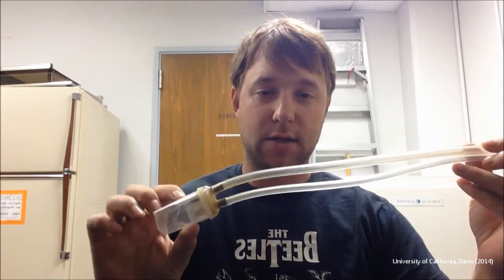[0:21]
I'm going to show you how to build a cartridge aspirator. First, let's talk about what an aspirator is. Standard aspirators are used to suck up small specimens. I'm an entomologist, so we suck up ants and aphids and whiteflies and leaf miners and things like that, small insects. A standard aspirator that you'll see in most catalogs will look something like this.
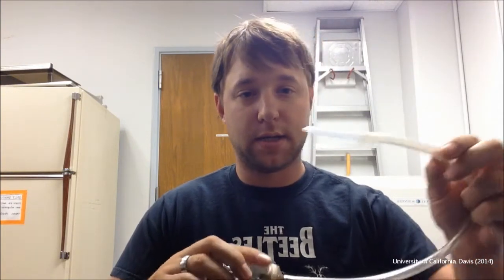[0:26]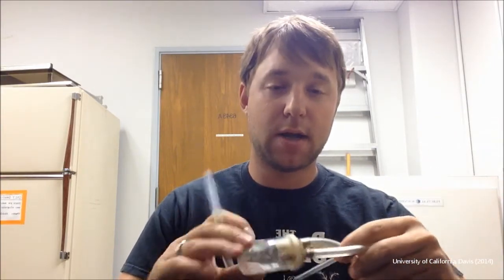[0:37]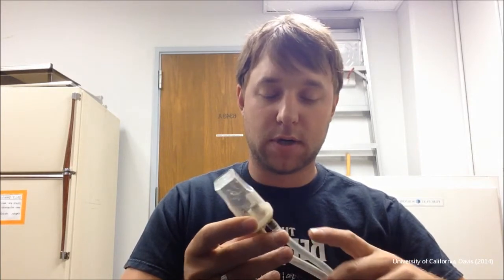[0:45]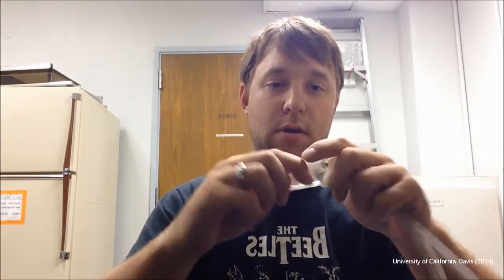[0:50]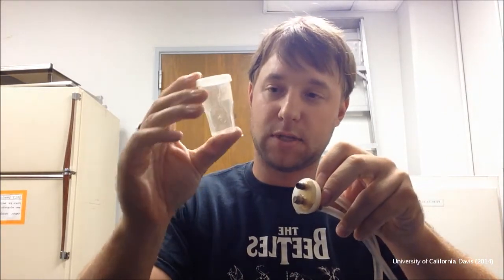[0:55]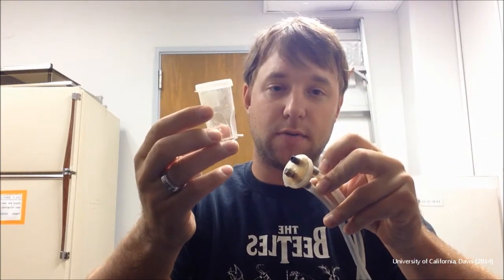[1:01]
You'll have a container that the specimen is held in, a tip of some type that you suck up the specimens with, and on the other end, you use your mouth and suck, and it causes a vacuum in the container, and your specimen will get sucked up through the tip and into the container. There's a screen on one of the tips to make sure that you don't suck up whatever you're trying to get into your container. Then you pop the container off and put on a lid and put a new container on, and you're set to go, and you have your specimen contained here.
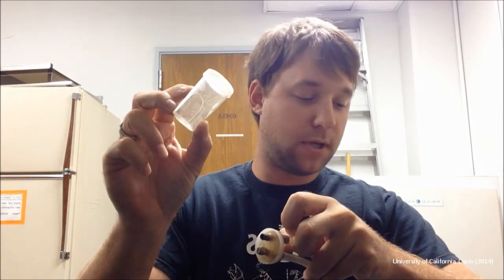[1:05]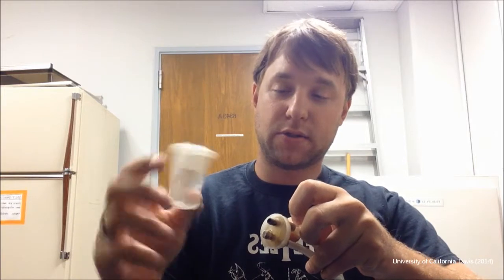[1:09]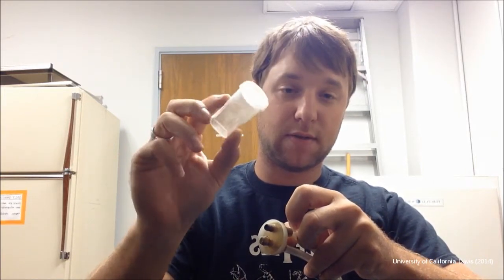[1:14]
The problem with these aspirators is that when you remove this container, if you're working with specimens that are highly mobile, they can easily escape unless you're very quick at it, and sometimes that doesn't happen. Also, these containers can be fairly large compared to what you're aspirating, and you have to carry around a lot of these, which can be inconvenient also.
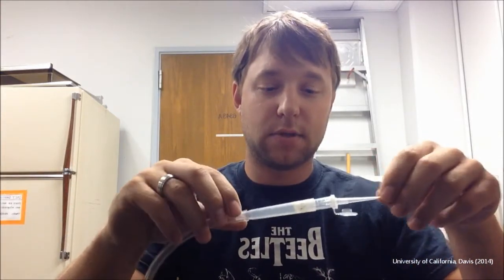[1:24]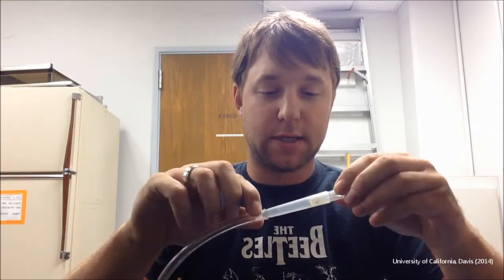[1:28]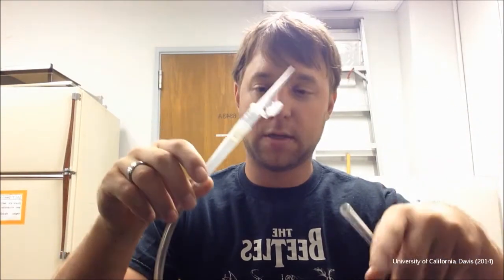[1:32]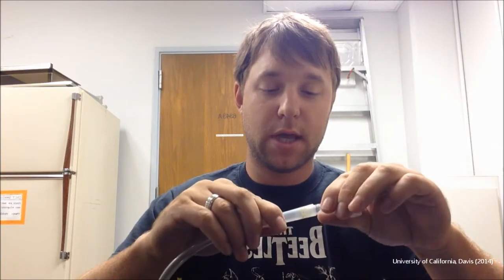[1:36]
So today I'm going to show you how to make a different type of aspirator that we call a cartridge aspirator. It's very similar to what's also known as a pooter. It consists of suction hose, Tygon hosing, widely available, and several other lab supplies that we'll talk about shortly.
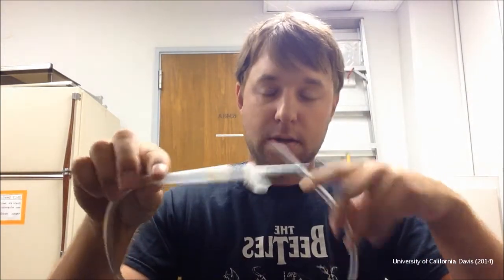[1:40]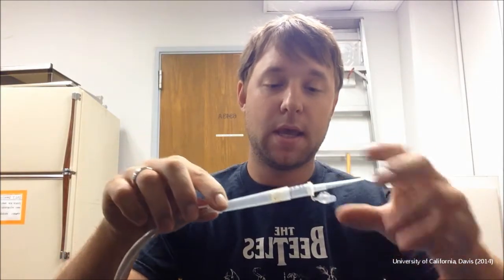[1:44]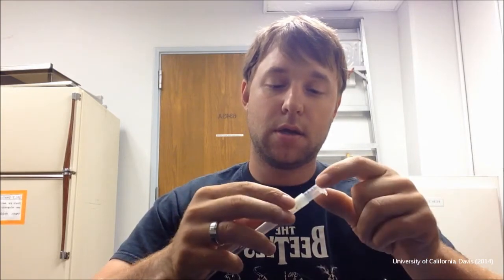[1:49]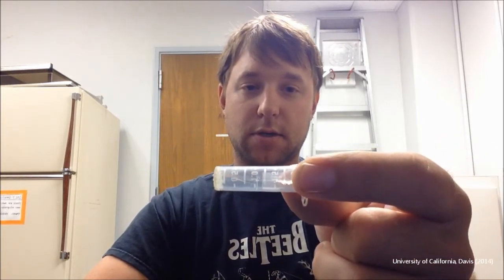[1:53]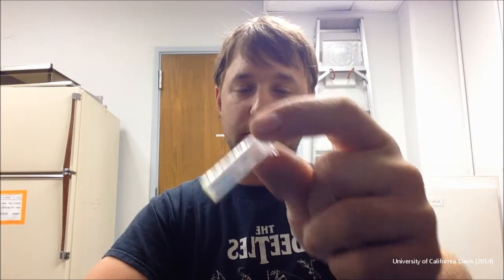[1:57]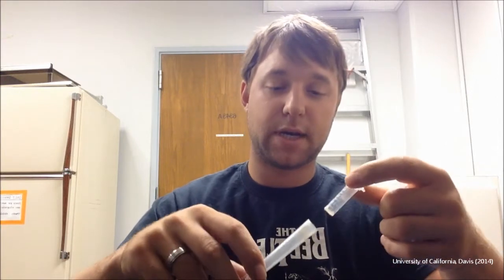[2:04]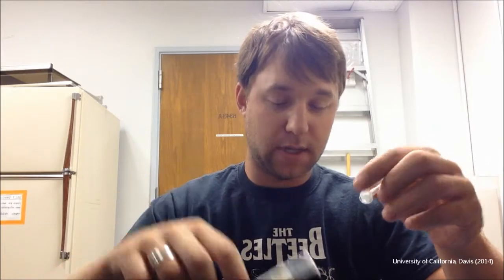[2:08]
The benefit to this is when you're sucking in your specimens, when you're done, you can continue sucking, remove the tip, close the lid, pull out the cartridge, and then you have your specimen in your cartridge ready to go. There's a screen on the bottom there, so you have a much smaller container. You can store that and go and put the next one in. The other benefit is this is all made out of very cheap supplies that you can get at any laboratory supply store. So I'm going to show you how to make that right now.
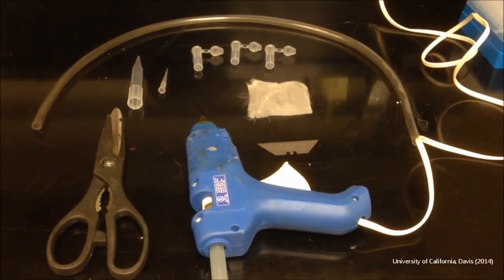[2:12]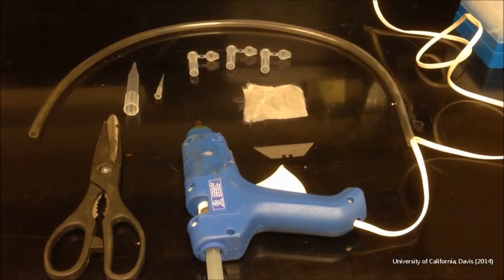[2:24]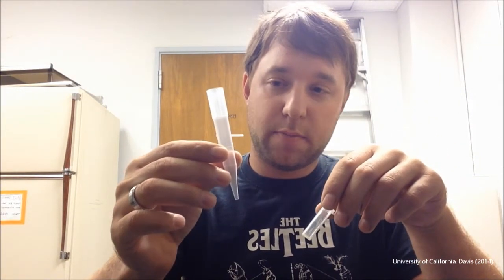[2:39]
What you will need for this project is scissors, a hot glue gun, a razor blade, some type of fine mesh that your specimen won't be able to come through, a small pipette tip around 1 mil, a large pipette tip 5 mil, Tygon tubing, and 2 mil centrifuge tubes. The first thing you're going to make is the aspirator body, or the cartridge receiver. I have a pre-made cartridge here, which is just a 2 mil centrifuge tube, and our 5 mil pipette tip.
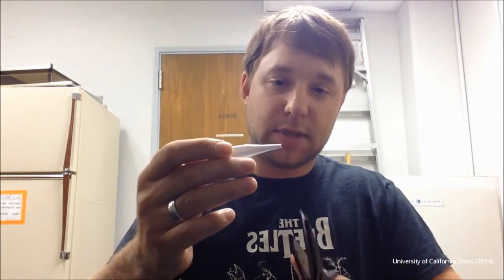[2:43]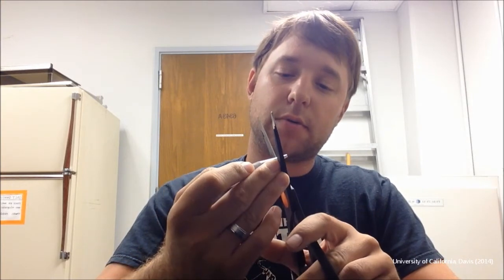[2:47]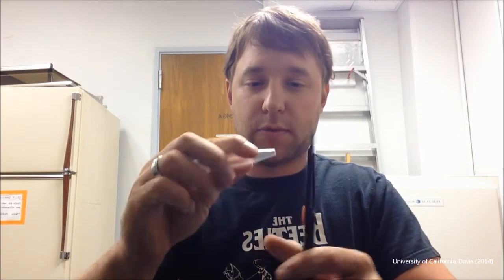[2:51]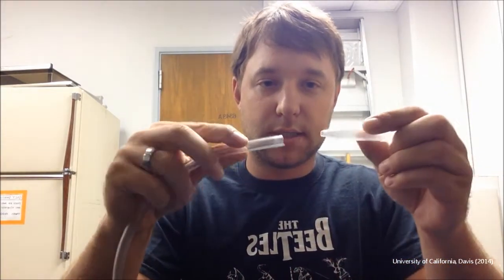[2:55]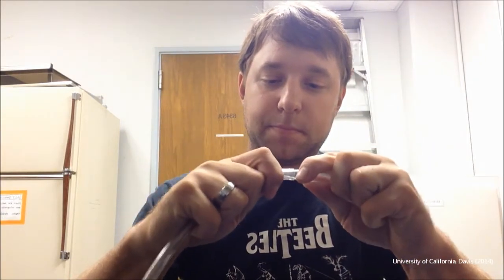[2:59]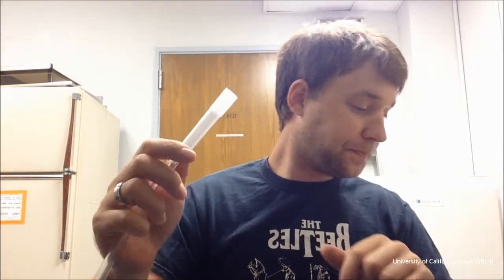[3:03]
The first thing we're going to do is snip the tip off of the pipette tip so we get higher airflow. We don't want to go too far up because we need to still put this into the Tygon tubing. Then we're going to take this and insert it into the Tygon tubing firmly. So there we go.
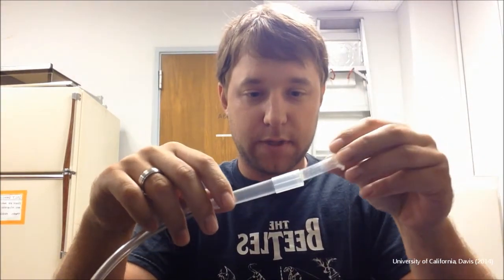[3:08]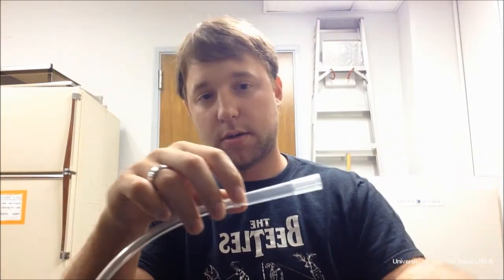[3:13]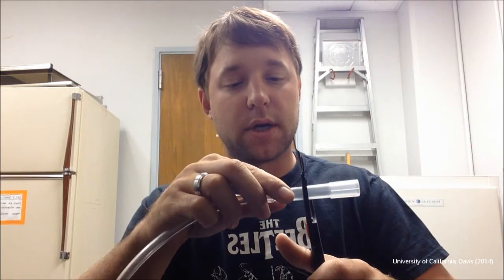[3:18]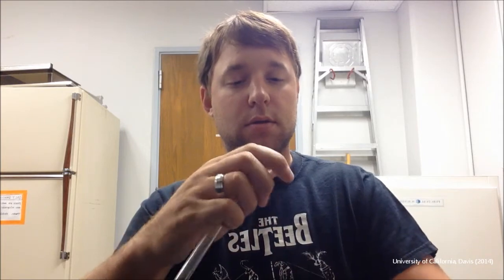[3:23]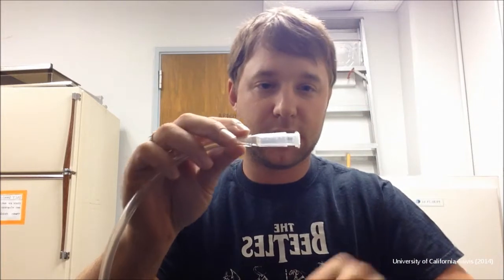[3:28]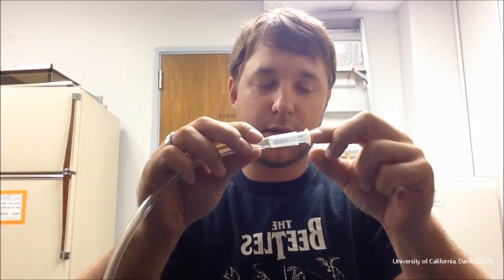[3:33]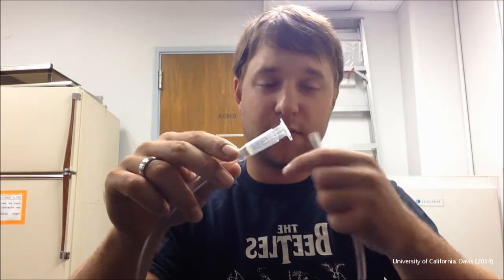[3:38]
And then the second step is we need the cartridge to fit snugly in here so that there's no airflow around it. So we're going to take our scissors here, and we're going to cut this pipette tip so that the centrifuge tube fits securely in the pipette tip. It sticks out a little bit so it's easy to pull out, but once it's in there, it forms a tight fit. One way you can check this is stick a cartridge in there, suck on the tube, and if you can't suck while the lid's closed, you're golden.
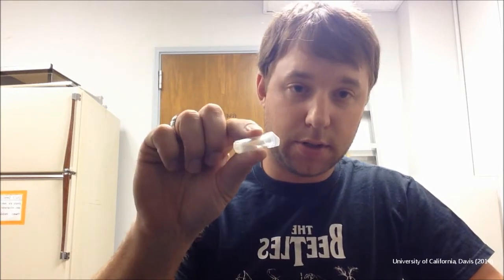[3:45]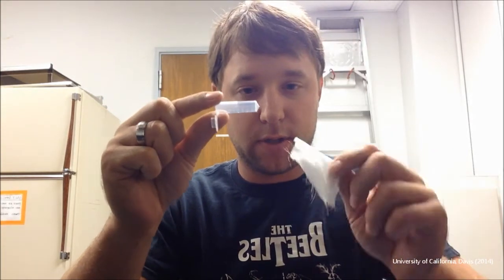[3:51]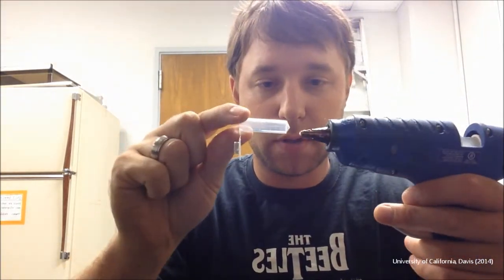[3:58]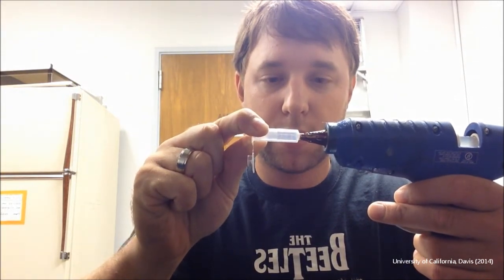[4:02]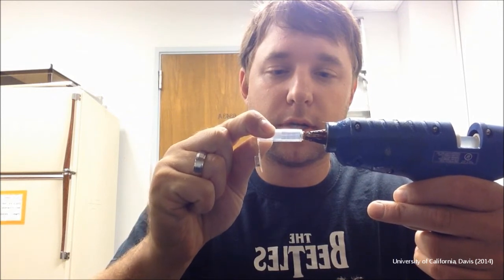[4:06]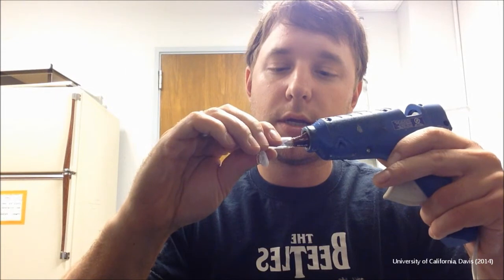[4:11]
Your second step is going to be to build the cartridge, which is very simple. It's just the 2 mil centrifuge tube and some screening, and we're going to melt out the bottom of the tube and glue it to the screening. So we take our hot glue gun, preheated, and we're going to melt the bottom of the centrifuge tube with the glue gun. Give it a second. These tubes take a decent amount of heat.
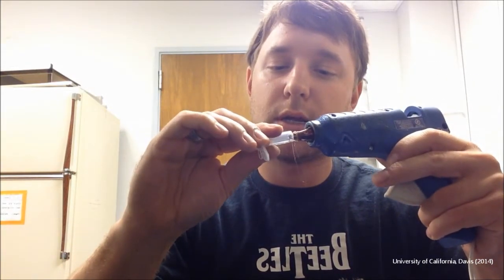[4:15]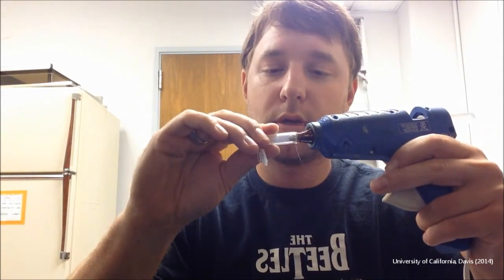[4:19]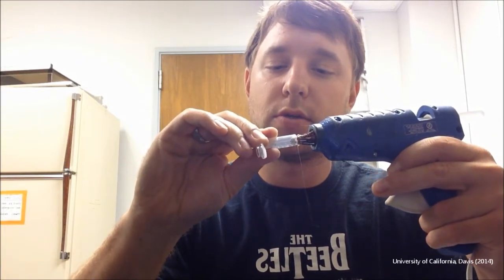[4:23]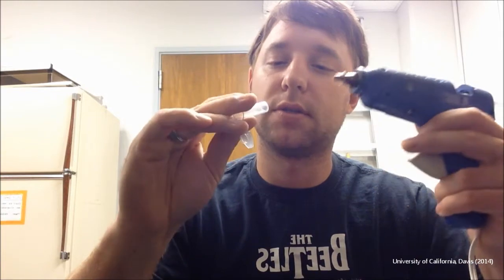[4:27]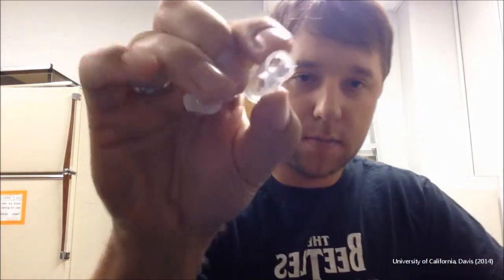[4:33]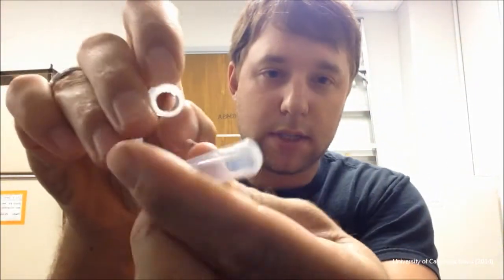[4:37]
If you're doing a lot of these and you're in a well-ventilated area, a soldering iron also works very well for melting out the bottoms of these tubes. But they tend to burn the plastic instead of just melting it like the hot glue gun, so you have to be in a well-ventilated area. So the bottom is now melted out of the tube. Okay, bottom's melted out.
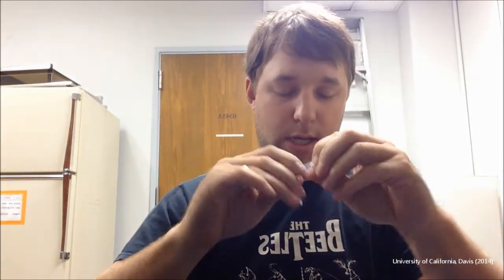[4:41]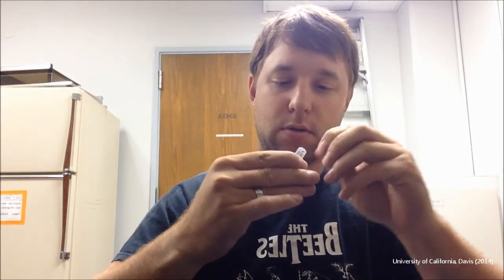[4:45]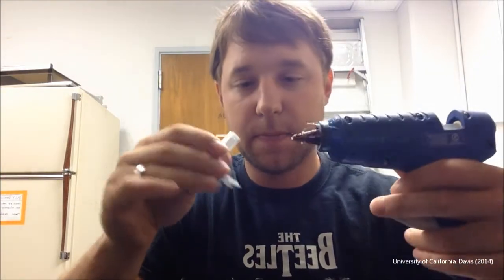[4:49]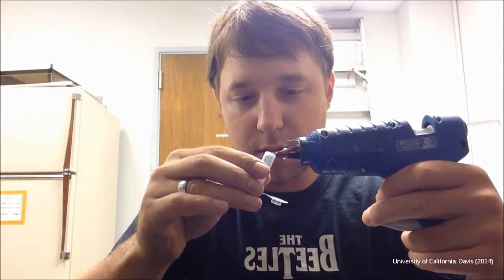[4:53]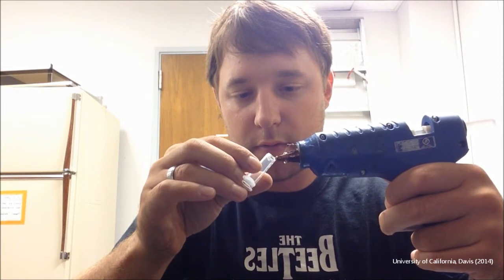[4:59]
So then we're going to make sure that there's no melted plastic inside the tube. Then we're going to take our hot glue gun. We're going to lay a nice bead around the edge of the tube that we just melted off.
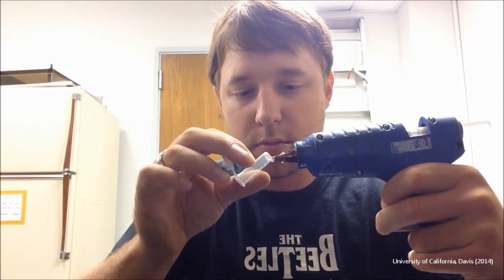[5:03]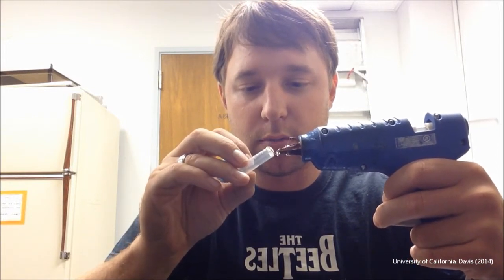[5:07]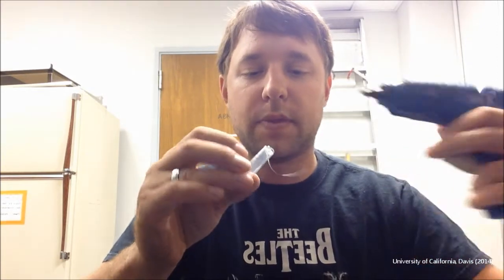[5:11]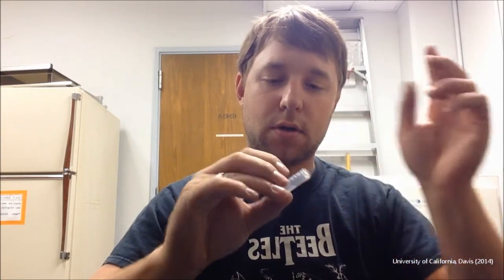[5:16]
Be very careful not to put too much glue. If you put too much, you can end up restricting the airflow. So there we go. That's hot glue strings everywhere. So then we're going to take that. You can't see it down here, but I'm going to push it onto my screening on my tabletop. Give it a slight spin.
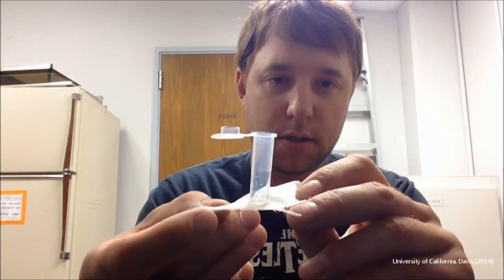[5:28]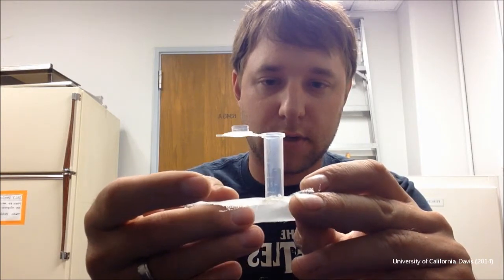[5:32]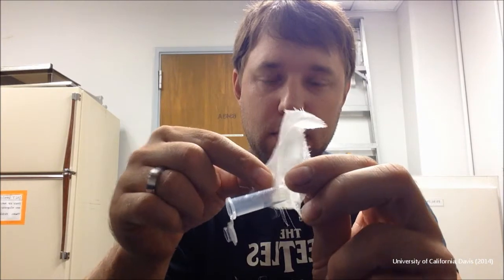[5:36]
So now my centrifuge tube is glued to my screening. Okay. So we're going to let that cool. We're going to do several of these at a time. And then we're going to go back through once they're all dry and cut them out.
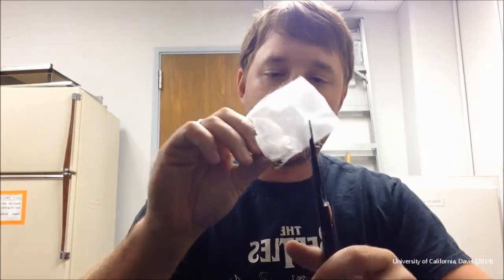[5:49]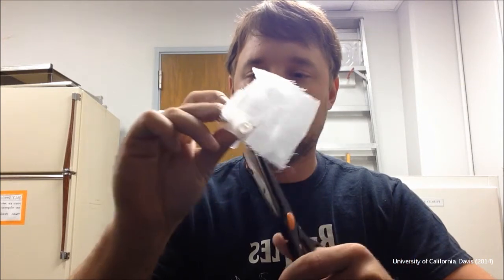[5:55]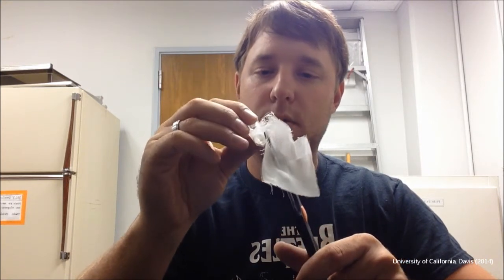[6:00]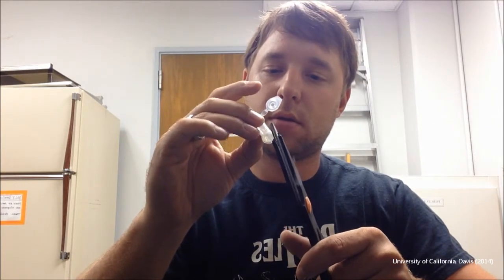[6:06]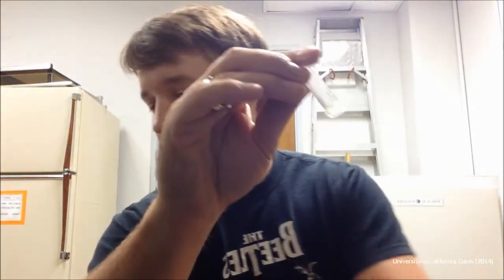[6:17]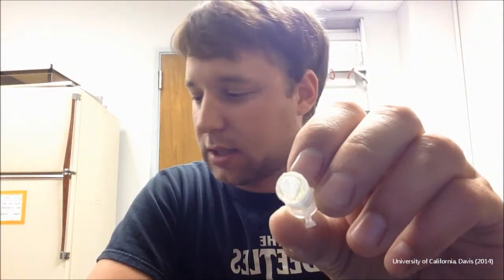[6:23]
To cut them out, we're going to use our scissors. We're going to just cut around it real nicely. Okay, so you can see I cut around it as close as I could with the scissors, and then we're going to take our razor blade and shave around that and make it nice and clean. Here's one I've already done with the razor blade. Make it nice and clean so that we have a nice clean circle that will fit nicely inside of our aspirator.
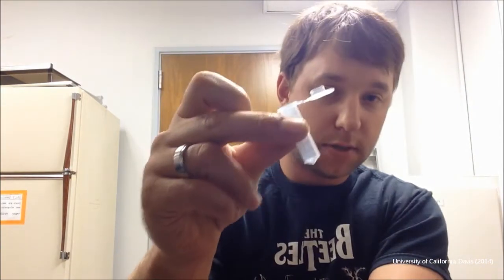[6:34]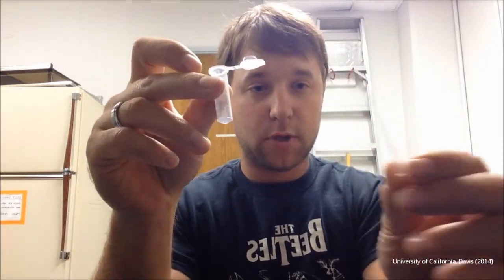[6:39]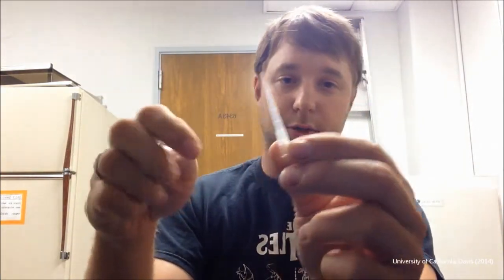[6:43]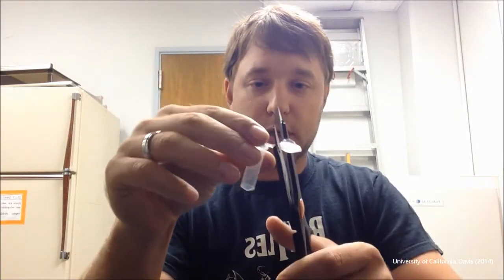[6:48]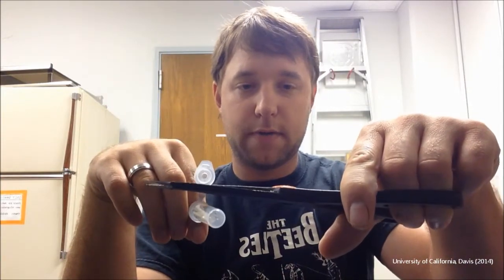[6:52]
The final step is to make your aspirator tip. So for that, you're going to need a centrifuge tube, one that you haven't melted the hole through yet, just a brand new one, your small pipette tip, pair of scissors, and your hot glue gun. Okay, so we're going to start with our centrifuge tube. We're going to snip the lid off of the centrifuge tube. You can discard this, that's trash.
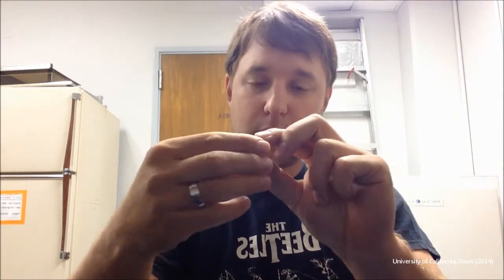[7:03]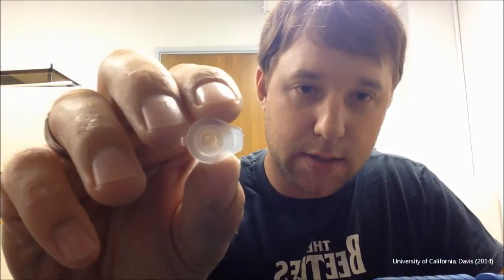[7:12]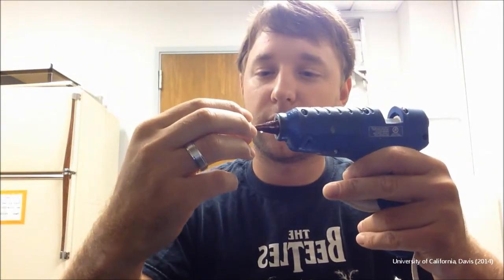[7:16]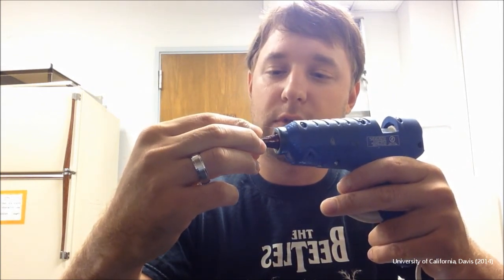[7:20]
So you're going to take this lid, your hot glue gun. Be careful at this part because we're going to melt with our hot glue gun. So you're going to melt out the center ring. Can you see there the center rings of the lid? We're going to melt those out with the hot glue gun that's been sitting heating up. You're going to melt that out. Be very careful. Obviously, hot glue gun's hot, so don't burn your fingers.
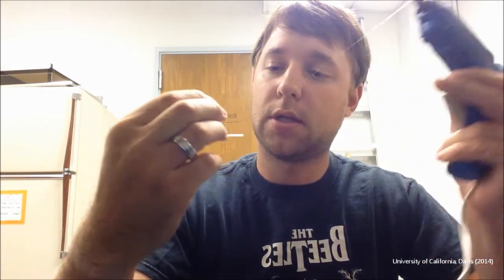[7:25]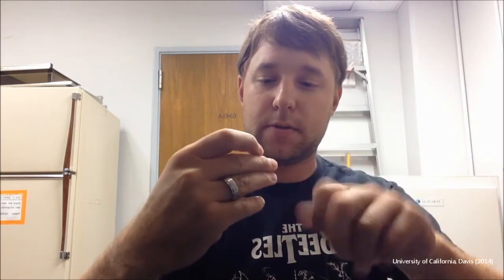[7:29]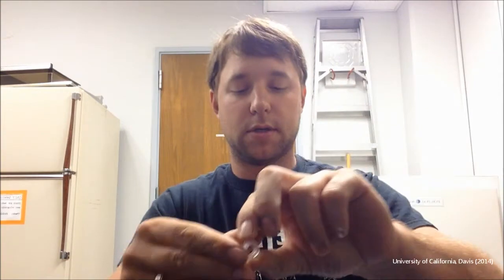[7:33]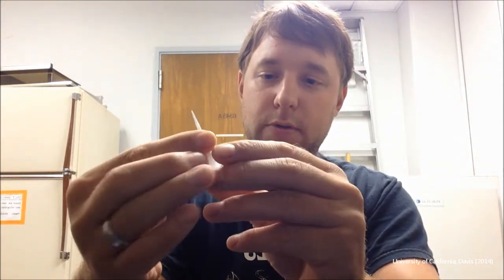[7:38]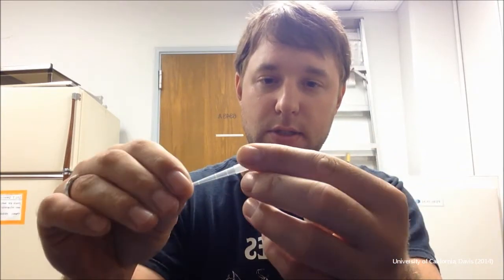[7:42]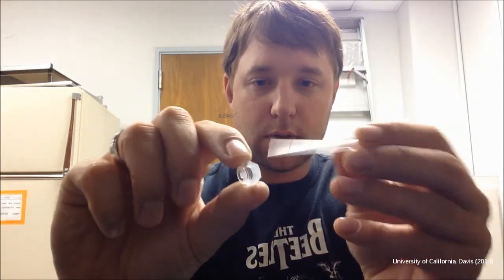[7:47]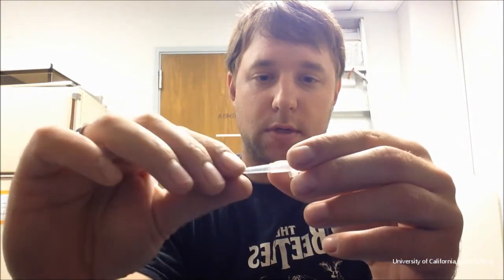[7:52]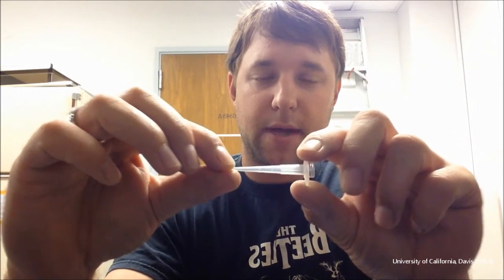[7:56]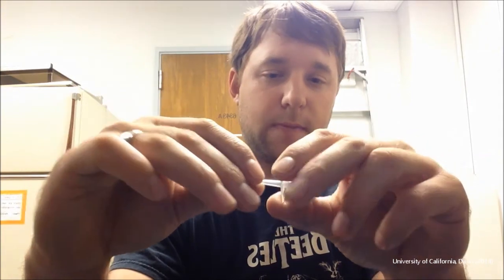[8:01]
So you can see there now, there's a hole in the lid. Now we're going to take our pipette tip and we're going to check and make sure we didn't melt the hole too big. Oh, that's just perfect. So you insert the pipette tip through the hole, and we want it to fit snugly in there and not pass all the way through. Okay, so that's perfect. So then we're going to take our hot glue gun.
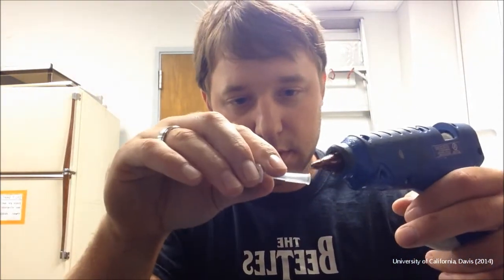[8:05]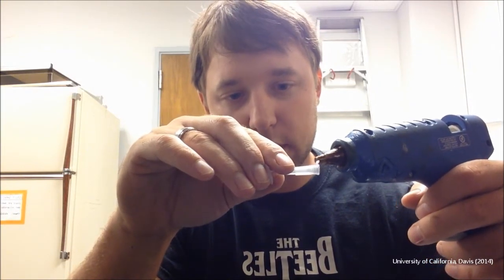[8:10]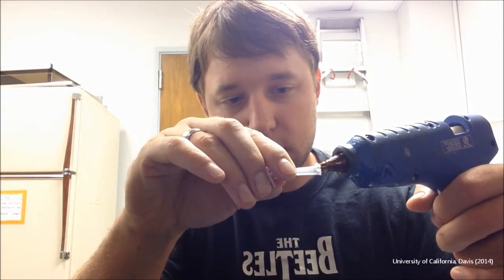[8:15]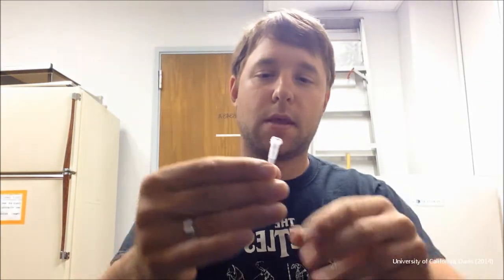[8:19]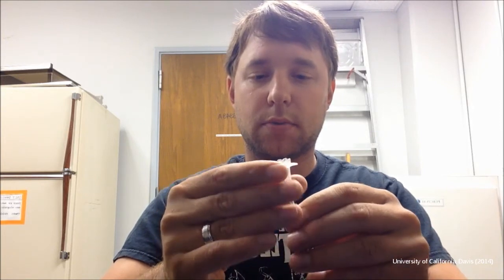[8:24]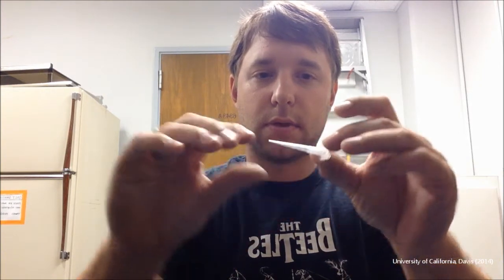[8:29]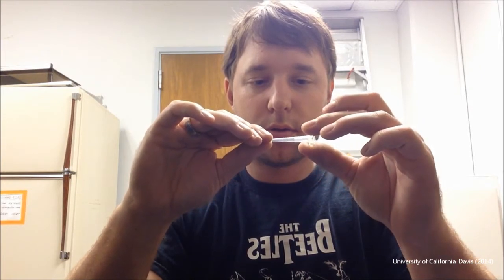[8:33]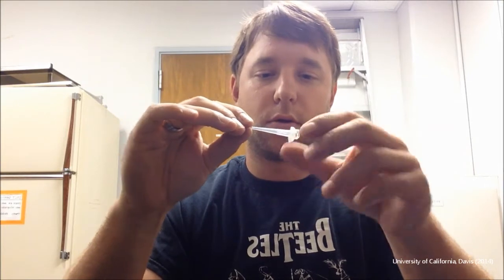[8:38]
We're going to put a bead of glue around the tip, hopefully. And be careful here, you don't want to melt the tip or put too much glue on like I just did. But that's okay, we can fix that. And then you're going to pull the tip down into the hole. Make sure we're square, and then we're going to let the tip dry, or cool rather.
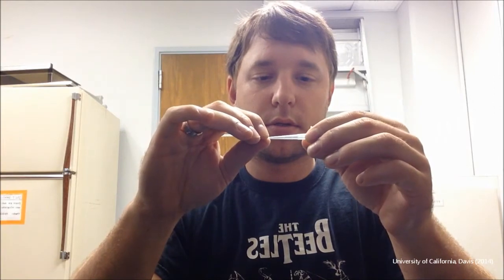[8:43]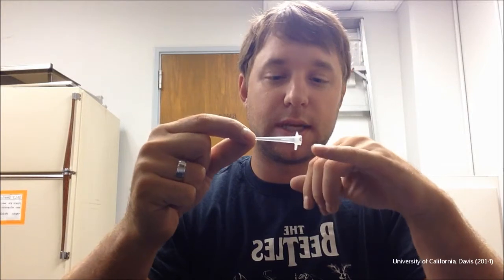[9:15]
So once the glue is set, we're going to use our razor blade and we're going to shave off any extra glue. As you can see there, I put on way too much glue because I have a large glue gun. If you have a smaller one, it's much better. A bunch of extra glue there. So we need to shave off that extra glue. So I'm just going to pick off what I can with my fingers now that it's cool enough to touch and not burn my fingers. There you go. You can also use a probe or something like that to push the glue down to make sure you have a smooth edge in there. So that's it. So your aspirator tip is complete.
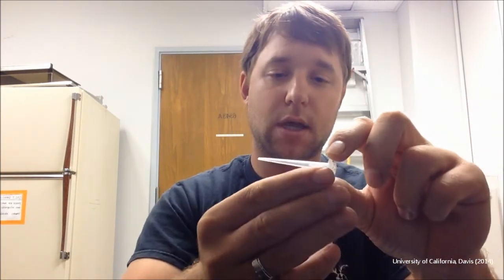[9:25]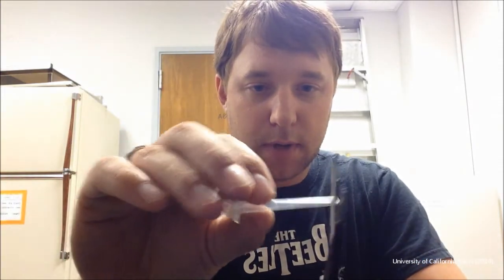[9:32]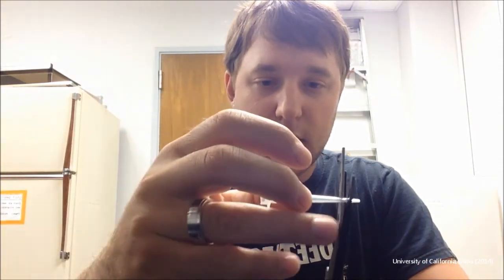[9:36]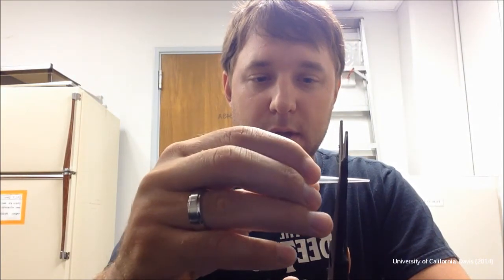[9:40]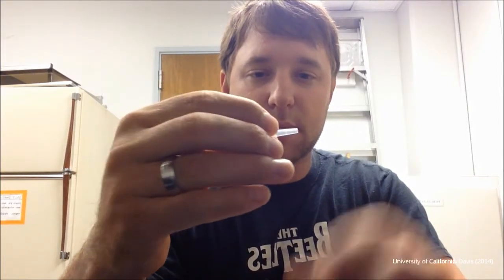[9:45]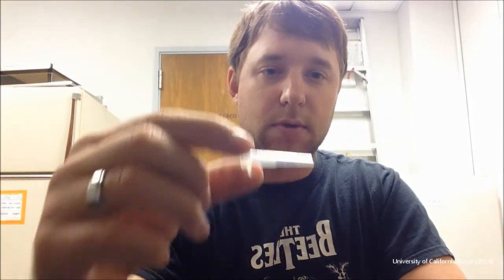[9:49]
I'd highly recommend making many of these. We're going to cut the very last step, which I usually do in the field, not when I'm making them, is you're going to cut the tip. Obviously, your insects are probably not going to be that small unless you're sucking up mites or something like that. So I work with leaf miners, which are about that big. So you cut the tip off, and now you have an orifice a little bigger than your specimen, and then you're ready to go aspirate.
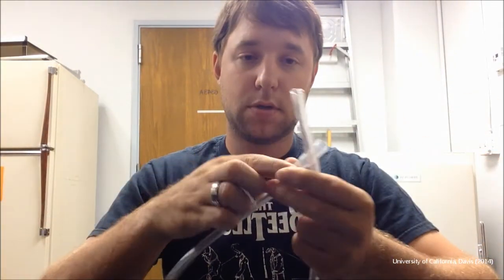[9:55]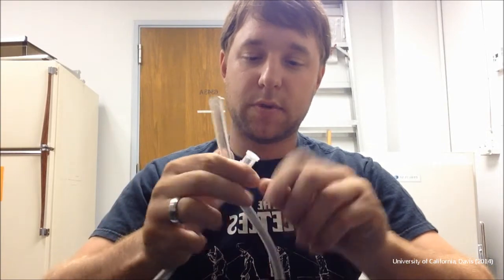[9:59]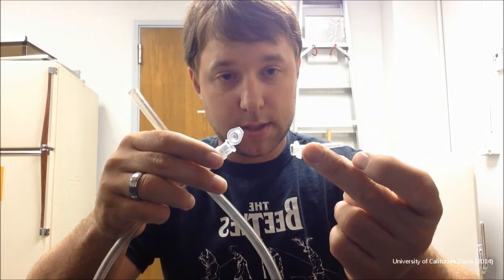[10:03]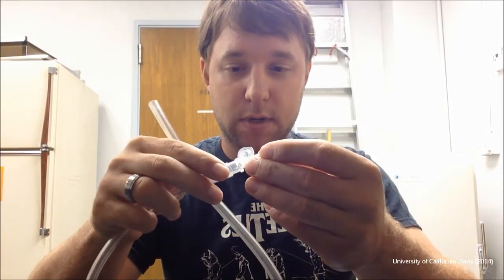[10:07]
So now we've made all three pieces. We have our suction hose, our cartridge with our screen on the bottom. Open that up. And we have our tip, which has been cut to size of whatever we want to aspirate. We put that on there, and we're ready to go collect our specimens for the day.